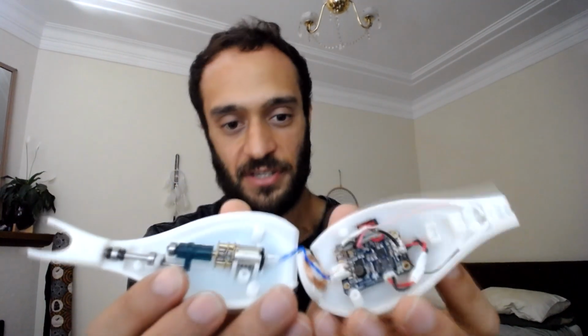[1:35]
Hi there. In this video, I'll be talking about a prototype I made a couple years back with the assistance of a friend. The idea of it was an electric tooth flosser, similar to an electric toothbrush. And I spent a few months working on it and came up with a functional prototype, which is this model here.
So that sounds quite intense, but it's not the finished version. And the idea was to have a piece of floss across this part here. So this would be a removable, disposable piece, which would have tooth floss in it. And the base is just kind of like a rechargeable permanent unit that creates some vibration. So you put the dental floss head on top, turn it on, and you would put it in between your teeth, sort of like this.
So in this video, I'll be talking about a few aspects of this project. The first of which will just be the concept and the idea, and how I came up with that with the assistance of my colleague. So check down below in the description and I'll have some timestamps of these points you can jump to, depending on what's relevant for you.
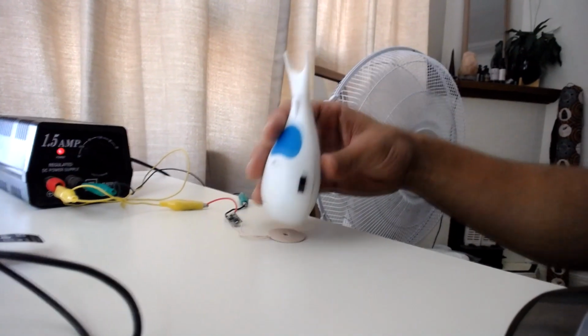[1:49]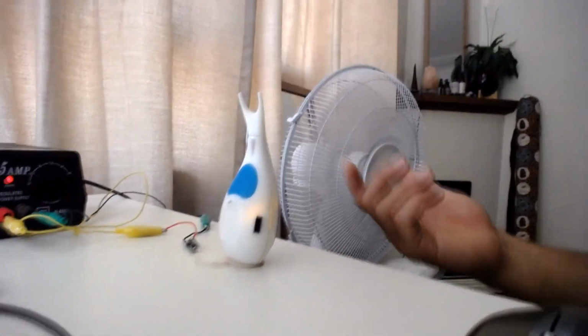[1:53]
The next point will be the prototyping, the design and the engineering, how I actually designed this and modeled it on the computer and physically made it. So just to give you a quick view of the inside, there's some electronics and mechanics involved. And also the unit is rechargeable, so I'll just quickly move the camera to show you. This is sort of the recharging docking base. So you can see as I put it down, an orange light comes on, which means it's charging. And when it's fully charged, that would turn to green.
Then I'll get on to the testing and the user feedback. So I did get a few people to try this out, and the feedback was actually quite good. So I'll speak briefly about that. The next step was determining how we would get a small batch manufactured, say 20 to 50, just to do a first sort of beta testing of these units. And I'll discuss that. And then the final step is the large-scale manufacturing and the business evaluation. And in that point, I'll talk about why I didn't pursue this idea or this project further.
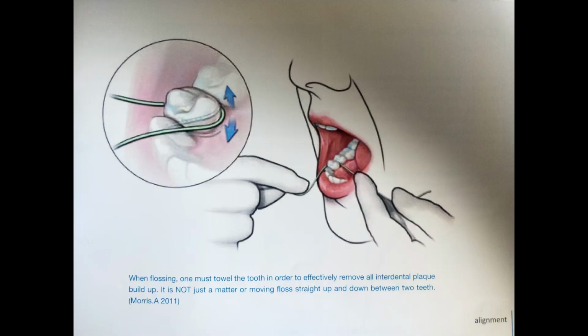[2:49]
But regardless, I actually learned quite a lot from this, about sort of business and trying to set up a small company if I were to do so. And more importantly, a lot about engineering and design engineering. So I'm a mechanical engineer now, and this project was quite valuable to me, and I'll discuss that more as we go throughout the video.
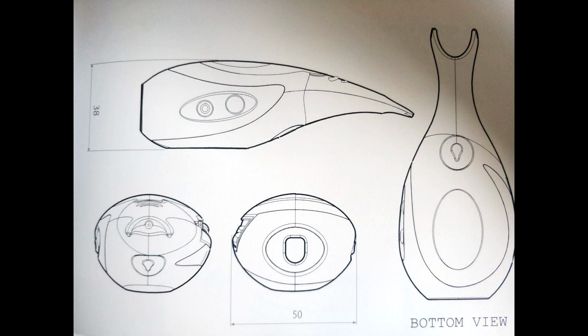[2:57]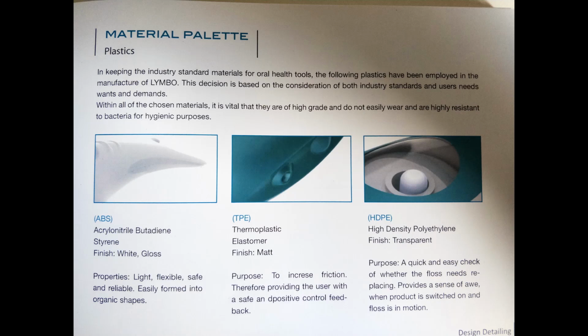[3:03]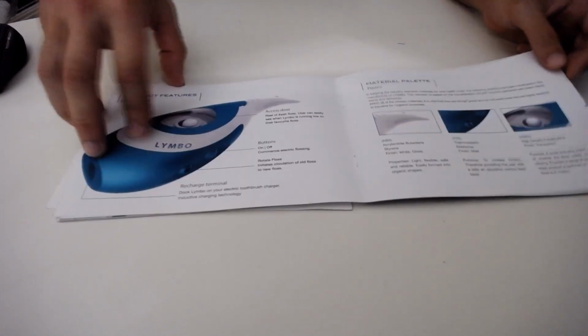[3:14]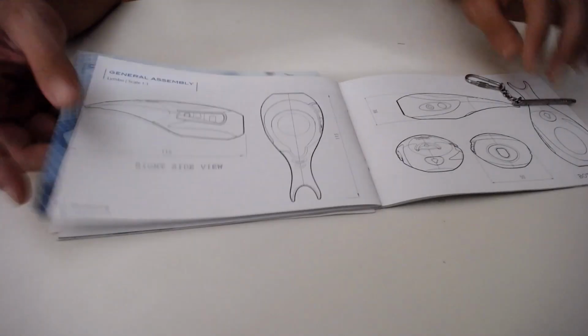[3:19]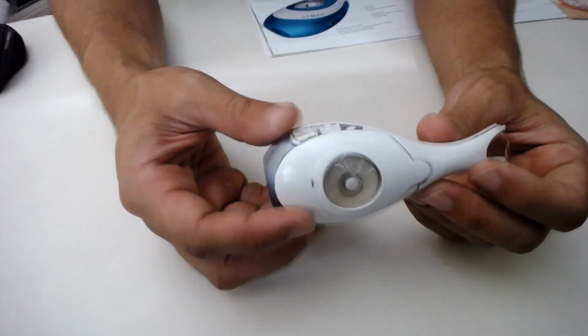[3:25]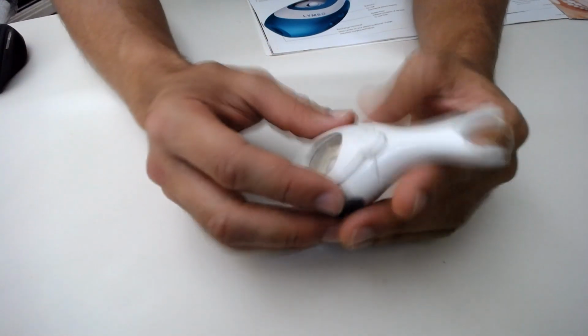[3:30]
All right, so looking at the initial concept there and the idea of this project or this product, it actually came from a friend of a friend who had done some kind of project or task at university on coming up with a product for an industrial design project. I don't want to talk too much about her work, but she put together quite a good range of work on a concept of such a thing, and did a rough model, like an aesthetic model and some drawings. So when she approached me, she actually had this model of it, which wasn't a functional unit, but just sort of demonstrated the concept and the form of the idea.
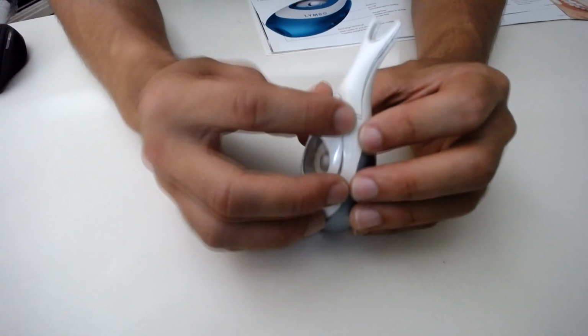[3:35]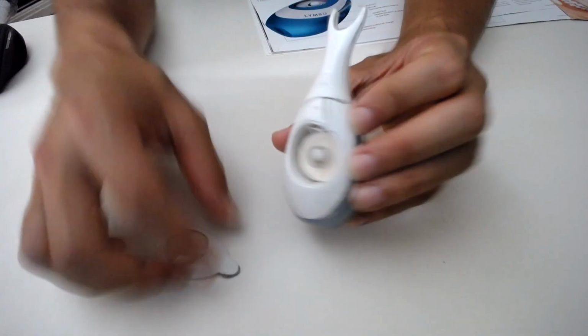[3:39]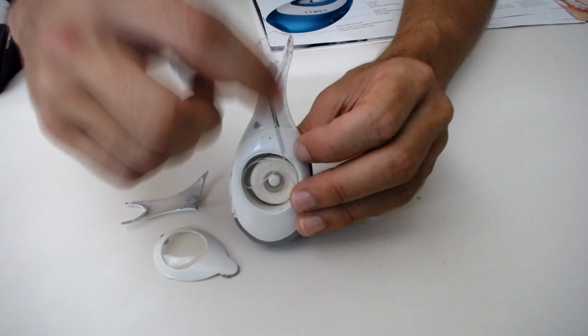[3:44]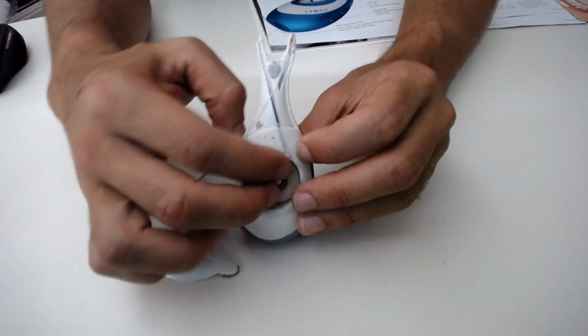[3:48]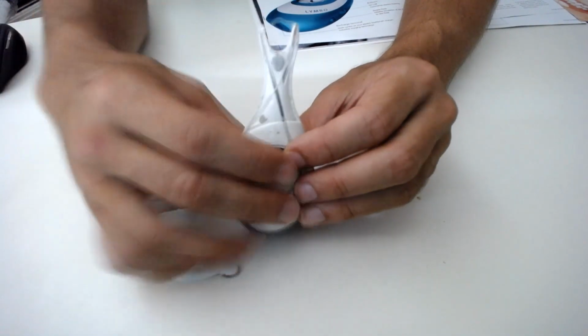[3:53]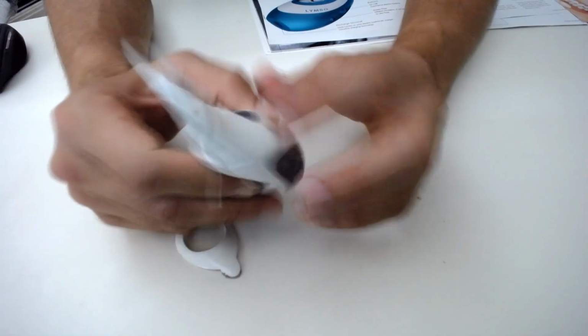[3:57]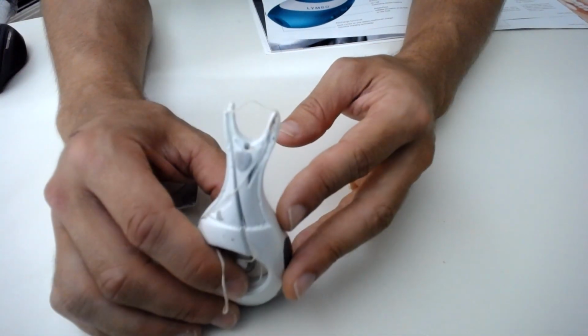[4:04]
Her initial idea was to have sort of a roll of tooth floss in the center here, which would be replaceable. And that would feed up in such a way that it would sort of loop around and pass through this top here. The idea was to have a motor in here that would rotate this round, and the floss would run around, and then you would put that between your teeth. And the power button would just sort of be on the side, and you would have a light somewhere here, a little LED to just let you see what you're doing inside your mouth a bit easier.
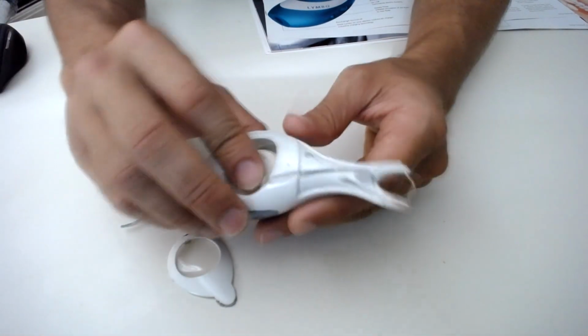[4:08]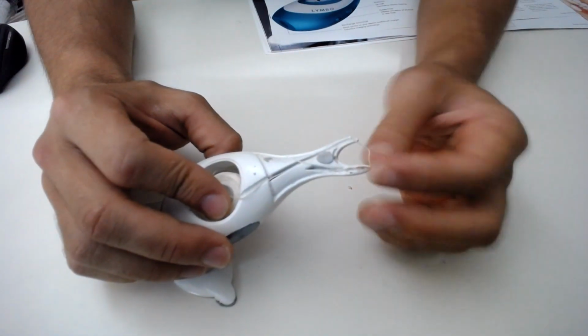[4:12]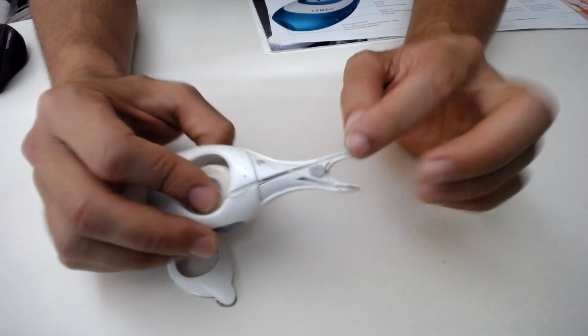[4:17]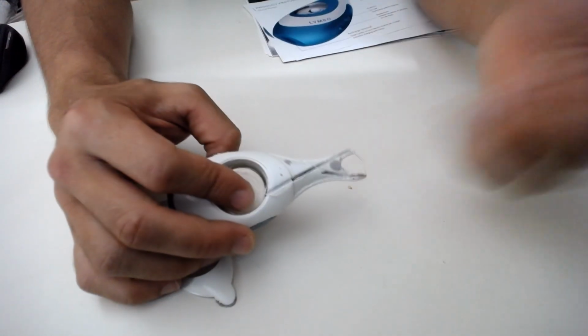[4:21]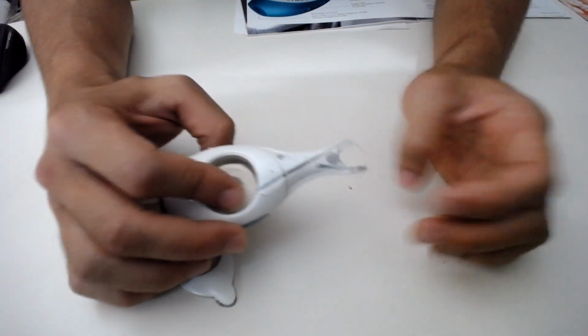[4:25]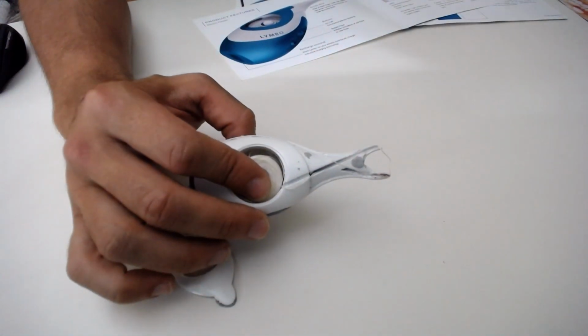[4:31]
The problem I had with this idea was that I didn't think it was very hygienic, because obviously you could have a lot of gross and dirty stuff in between your teeth. So as the floss would pull that off, it would pull it back inside the device. At the time she approached me, I was actually working as a research engineer in a medical device company that specialized in infection prevention, and they made devices that would sterilize and disinfect medical equipment.
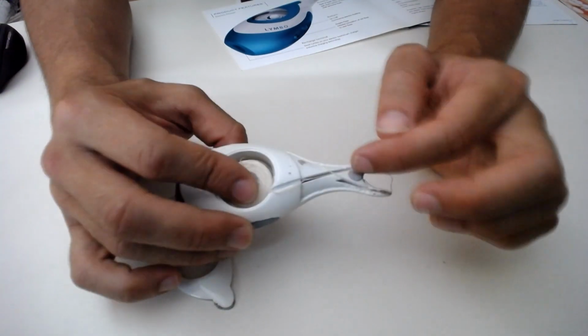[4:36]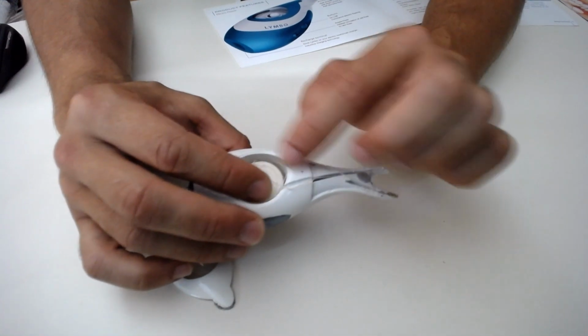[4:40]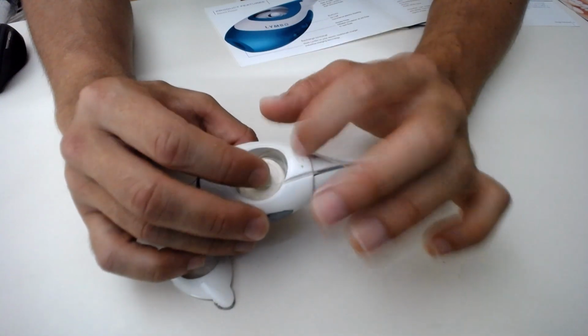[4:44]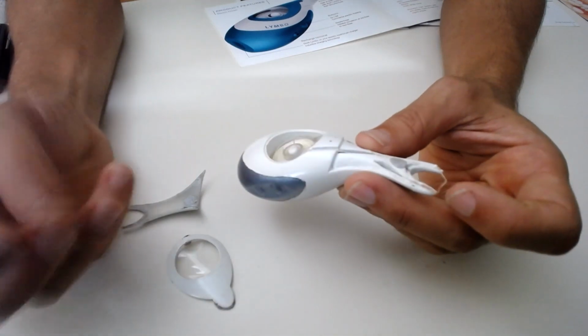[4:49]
I was just thinking, if you had something that was pulling bacteria inside these small paths, these small channels, it would create a lot of biofilm and just get dirty over time. And it wouldn't be something that you would want to continuously put inside your mouth.
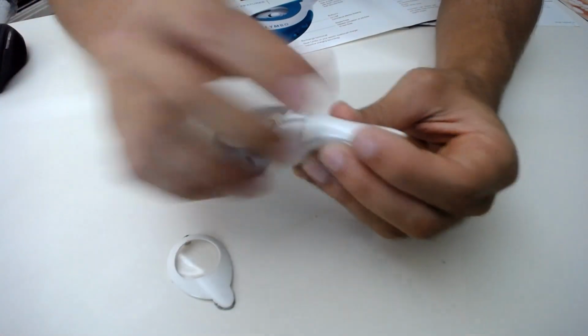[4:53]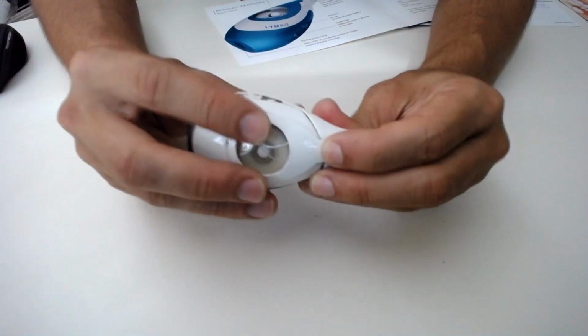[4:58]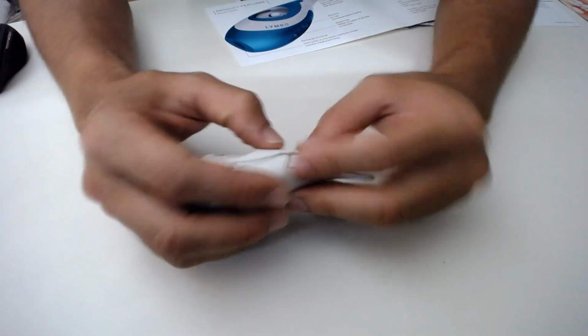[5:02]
I had to think about it, and initially, to be honest, I didn't think it was really a good idea. I wasn't that keen to work on the project. But I thought about it a few months later. I thought, why not? May as well give it a go. I had some spare time on my hands.
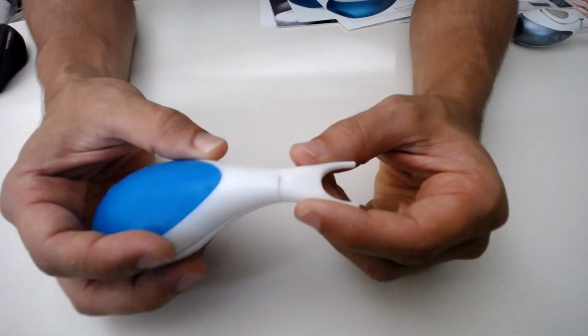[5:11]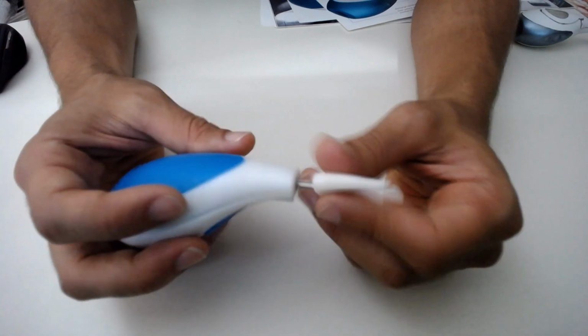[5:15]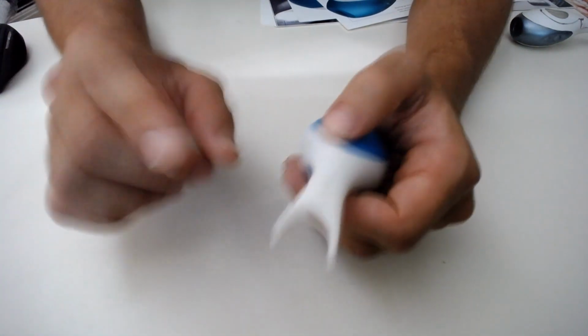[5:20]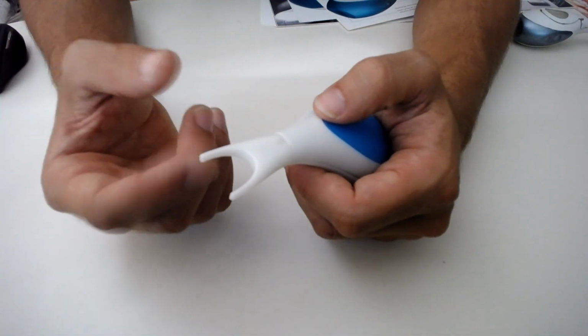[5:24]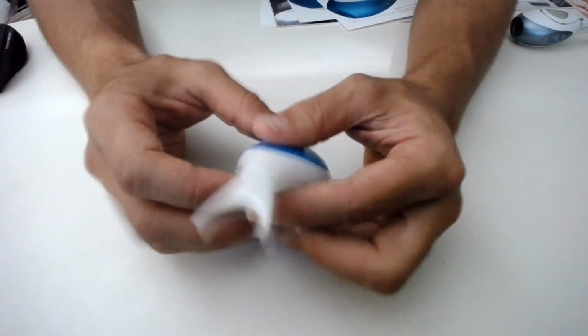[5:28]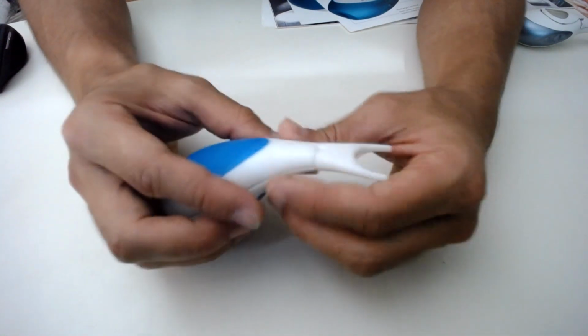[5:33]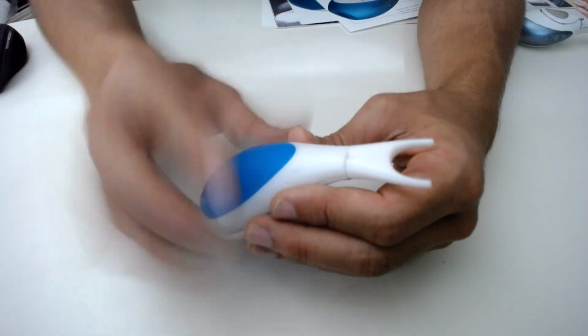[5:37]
I came up with the idea of a replaceable head and actually looked at some electric tooth flossers. And electric tooth flossers tend to have a circular head at the top. I used to think it just rotated around continuously, but it actually just swivels back and forth. So I opened the old one I had up, and it had a mechanism inside that caused some knocking back and forth, which translates to vibration roughly.
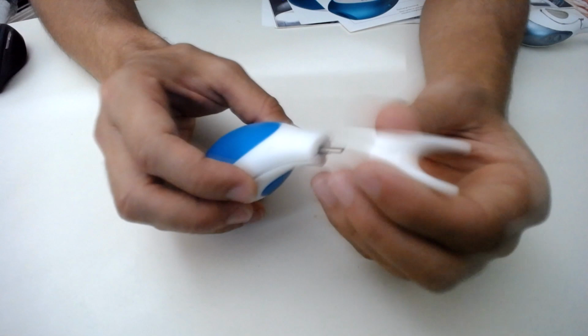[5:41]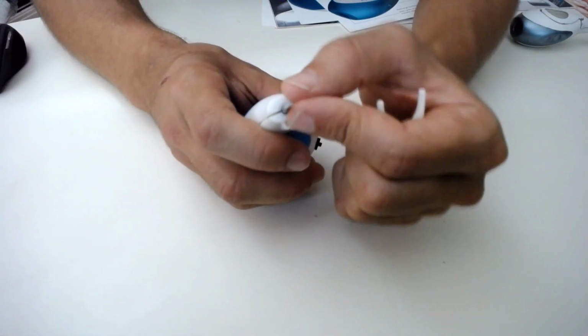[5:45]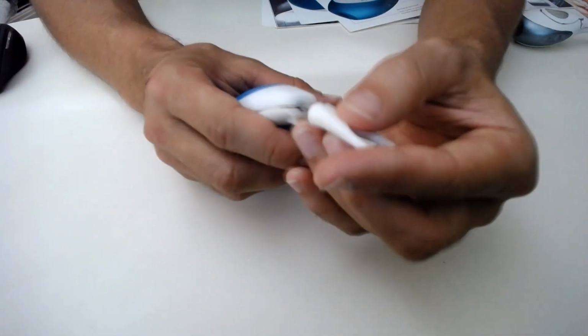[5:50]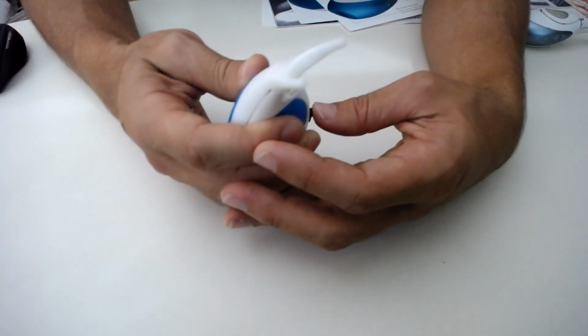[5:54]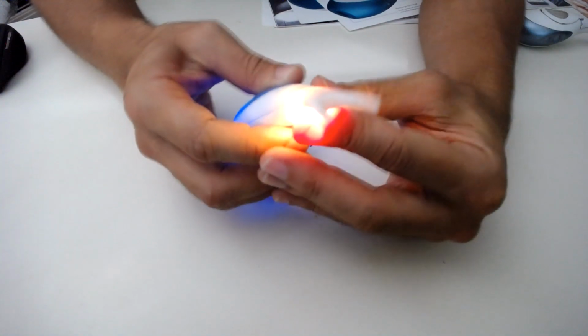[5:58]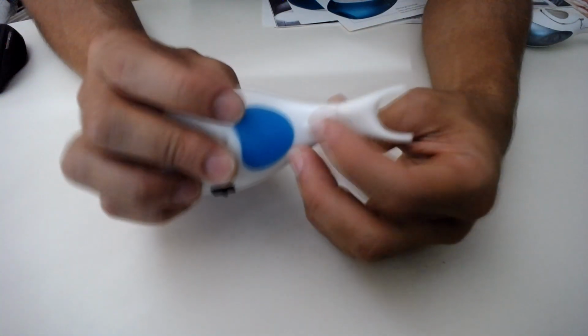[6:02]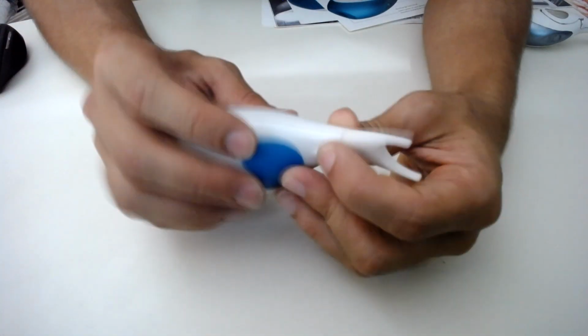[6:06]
The idea was that I would have this shaft which would swivel back and forth, rotate slightly on the spot, and then you would put this head on, which would also rotate, and the end effect was just some vibration. This is a bit intense, but it could have easily been toned down for something more subtle and smooth.
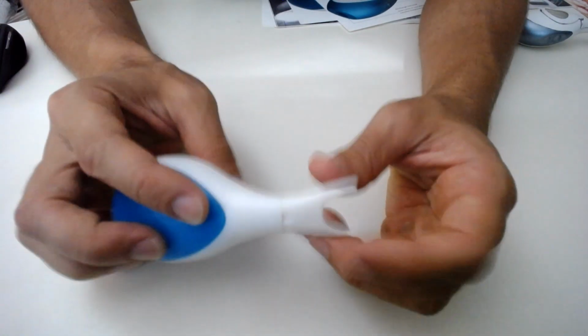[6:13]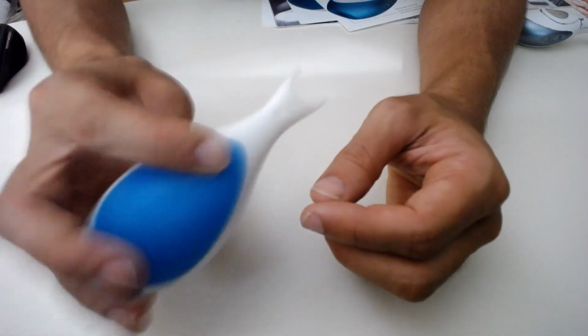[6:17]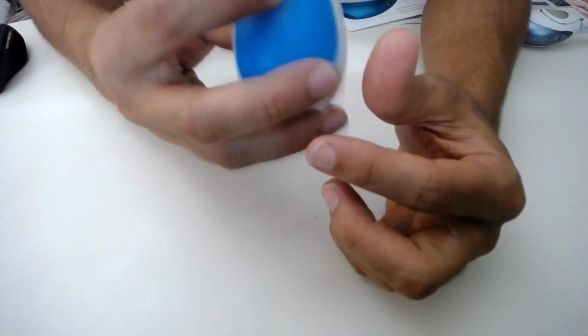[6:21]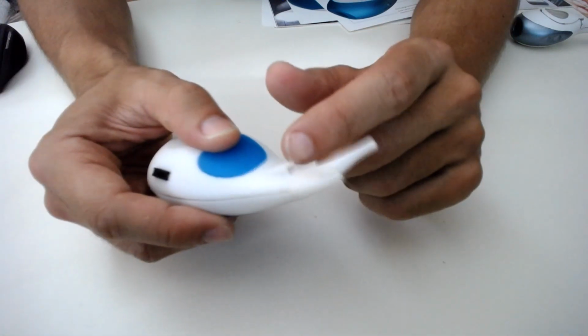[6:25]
The idea in my mind was that that vibration would just help loosen up any kind of plaque or stuff between your teeth and would help insert the floss between your teeth. And the general shape of the thing would be nice to handle and manipulate to put inside your mouth, and the light would help you see things a bit clearer.
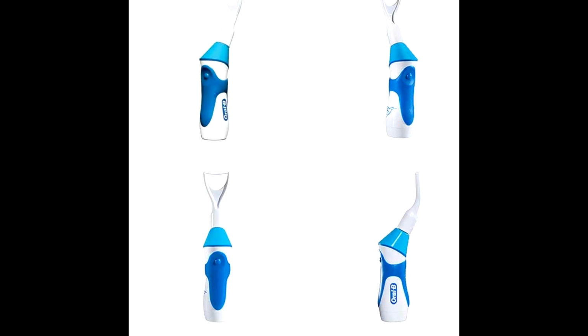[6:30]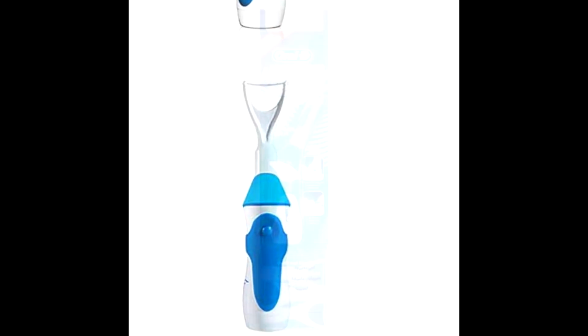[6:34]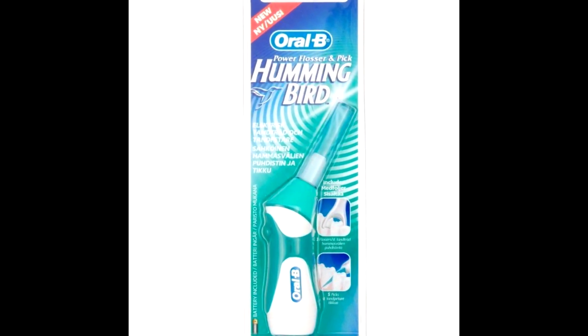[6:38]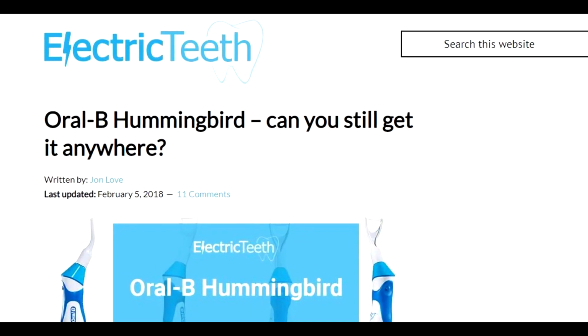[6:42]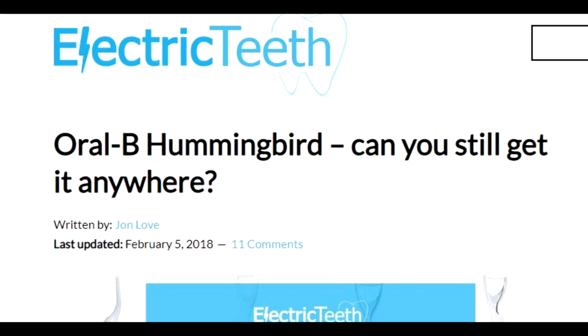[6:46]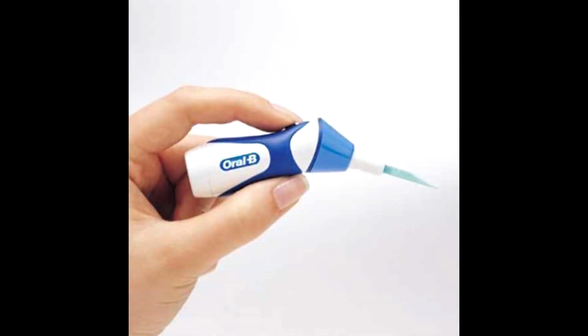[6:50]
Turned out that Oral-B actually made a device similar to this in the past, which was called the Oral-B Hummingbird. This device was discontinued, so through all of my research I couldn't actually find the exact reason why it was discontinued, but it seemed like a fairly nifty device. It again had the replaceable floss head, so I hadn't thought of anything new there.
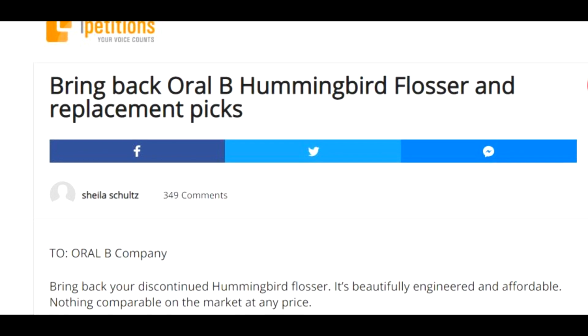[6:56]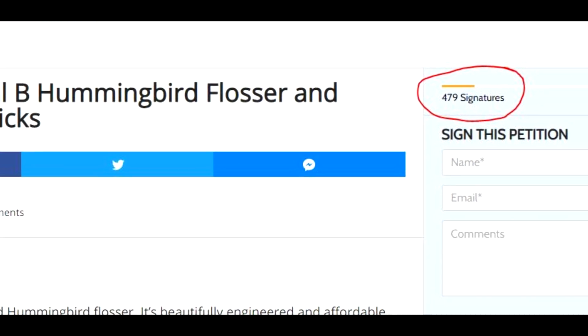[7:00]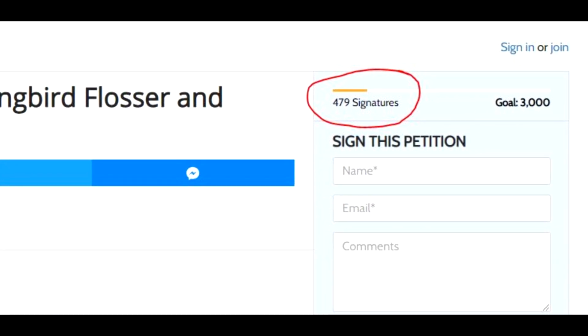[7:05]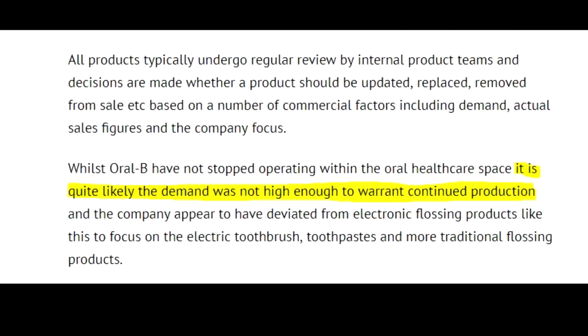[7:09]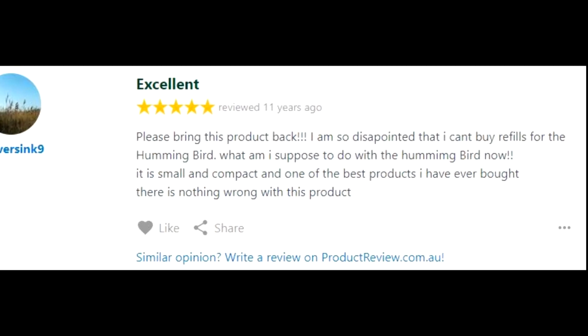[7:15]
Found some forums where some people were asking if they could still get this device and they'd be a fan if it came back. So yeah, I wasn't clear why this was discontinued. The first thought that came to my mind was that it wasn't selling well. There wasn't necessarily a market for it. People didn't want it, but there were still quite a few people on this forum I found that were asking for it to come back.
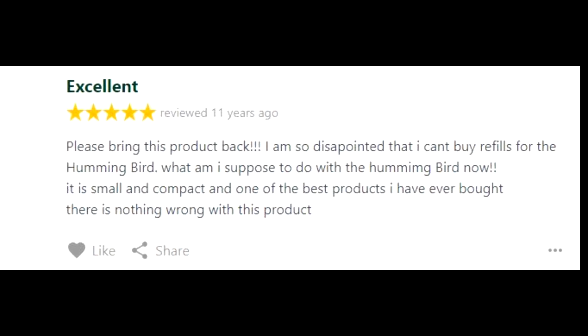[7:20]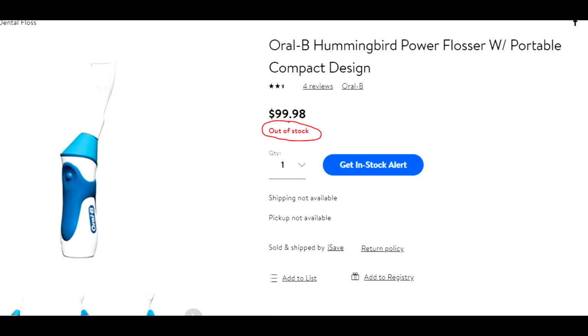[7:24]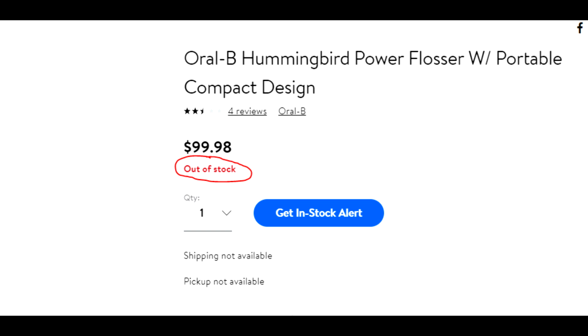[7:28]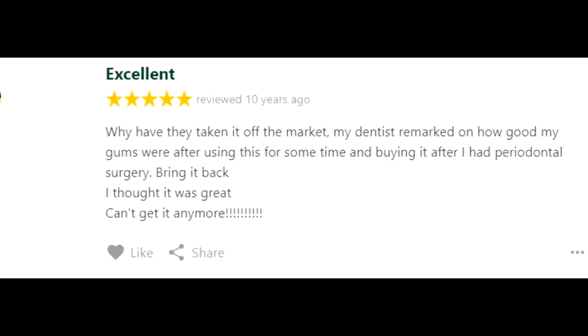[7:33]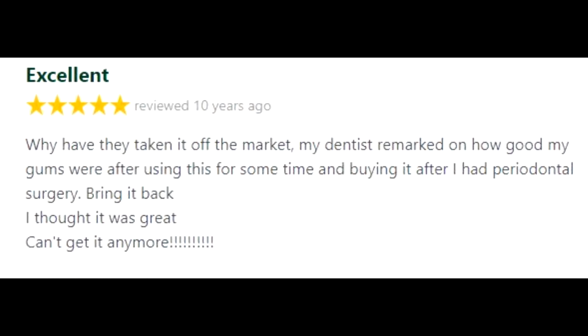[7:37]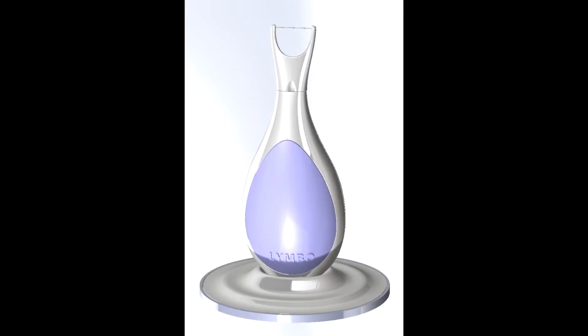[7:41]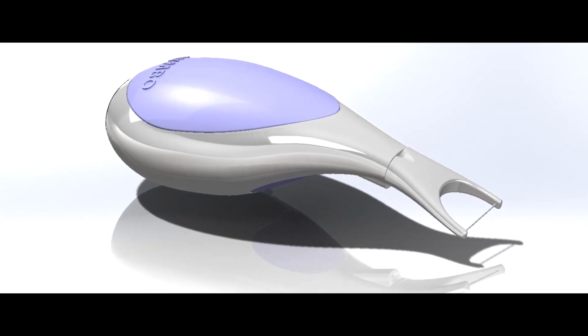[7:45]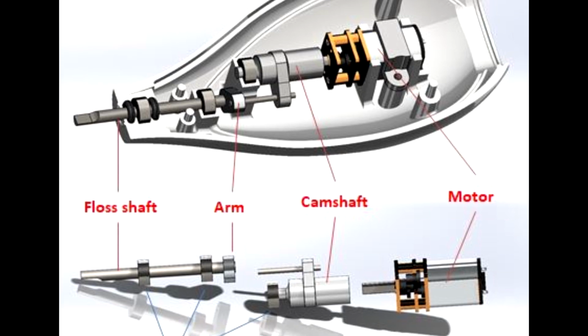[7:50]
And I think possibly even still to this day, you can buy replacement heads for the Oral-B Hummingbird on eBay. The price is ridiculously expensive now. But I thought, it's one of these things you don't really know if this kind of product would sell until it was on the market, and a lot of it would depend on marketing as well. So I thought, why not give it a shot? I really hadn't invested much money or time into it so far, so was quite optimistic at that point.
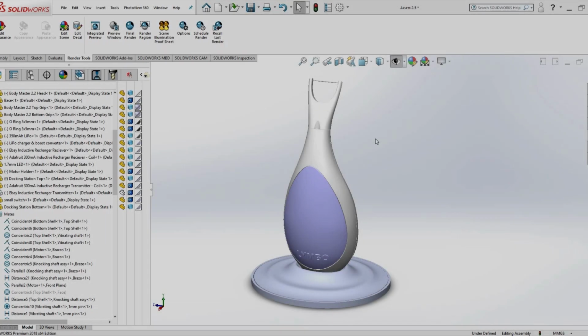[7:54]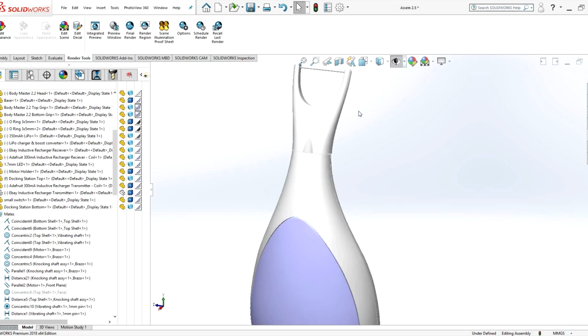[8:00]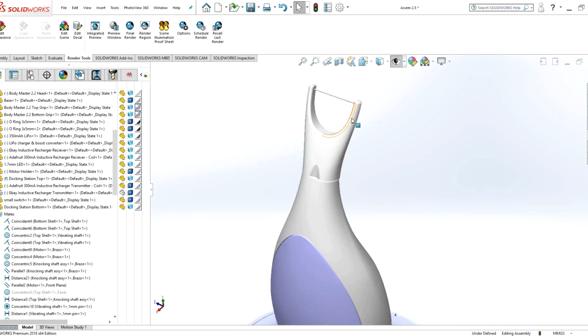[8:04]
All right, jumping straight into the mechanical design. It won't be possible for me to cover every detail in this video, but if there are any questions you have, feel free to comment below, and I'll try to get back to you with some useful information.
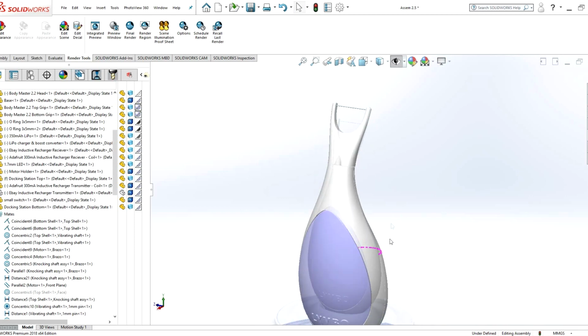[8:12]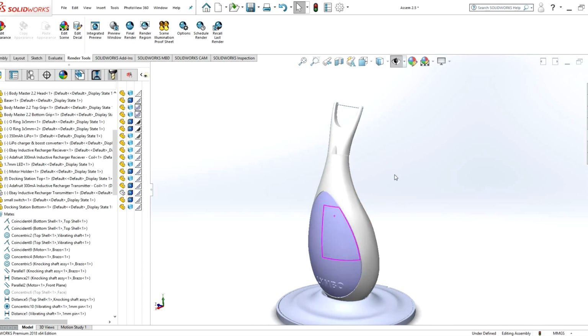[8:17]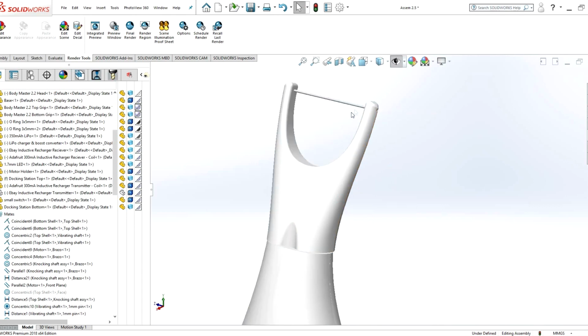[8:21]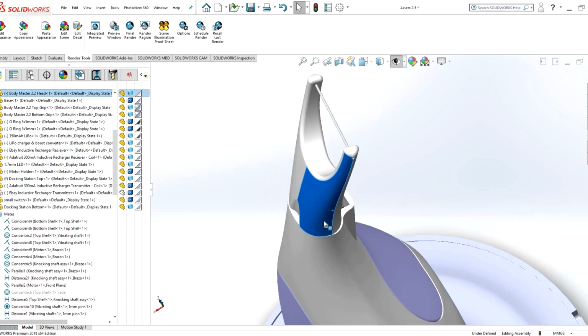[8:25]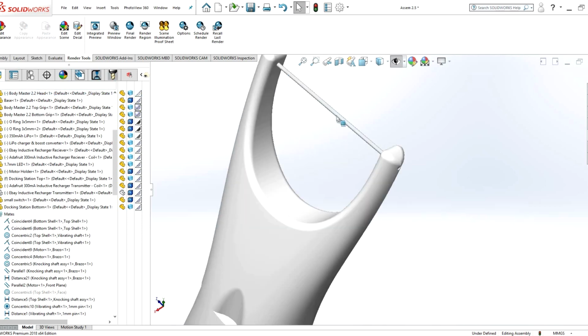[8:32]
So when I first started, the first fundamental step was really just thinking about how I wanted the mechanism to work. As I said earlier, the form was given to me by a friend of a friend, and I decided that I would have a removable head that would vibrate roughly like this, just back and forth, minimal vibration. And one thing that you couldn't see on the prototype I showed earlier was the actual floss embedded in the replaceable head.
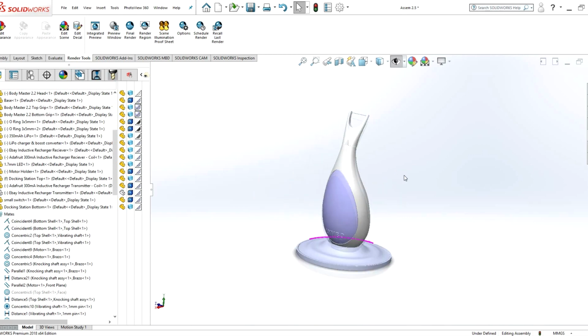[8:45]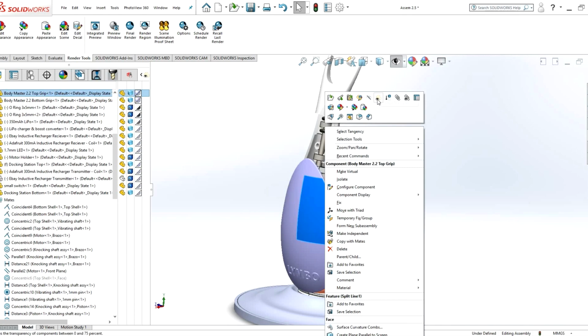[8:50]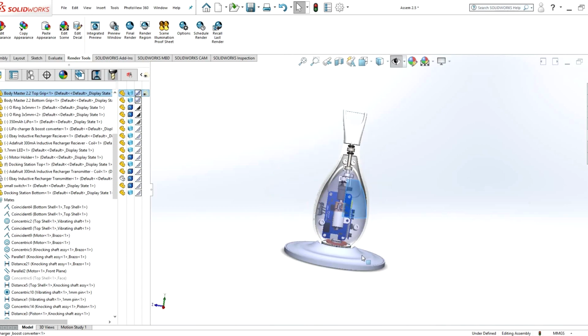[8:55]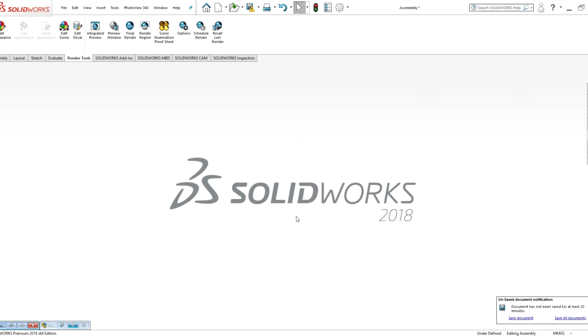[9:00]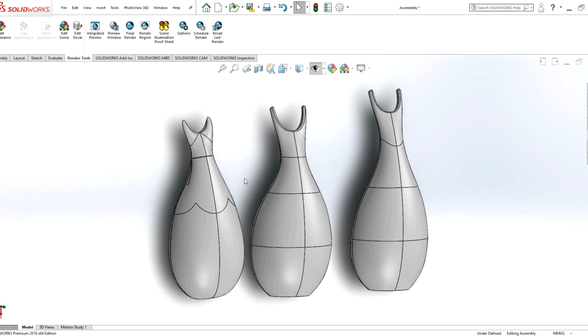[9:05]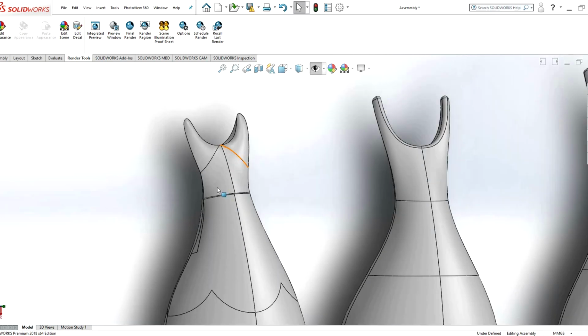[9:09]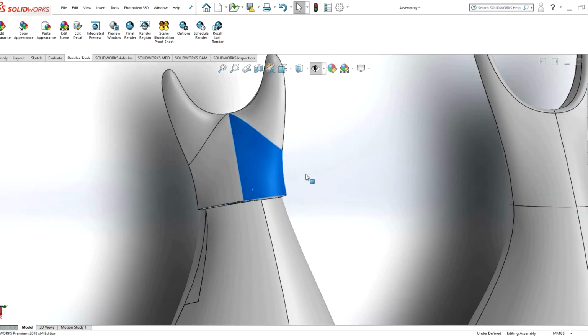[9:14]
That was one thing that was difficult to prototype. I did actually prototype it, but I don't have that model anymore, but I'll talk about that in a little bit. So before I get to this final model, which actually has all the internal electronics and whatnot visible in there, I'll just go back a few steps. First of all, I started with modeling some different shapes and forms. I think this unit on the left was one of the first models I did, which had the rough idea of how I wanted the mechanism to work.
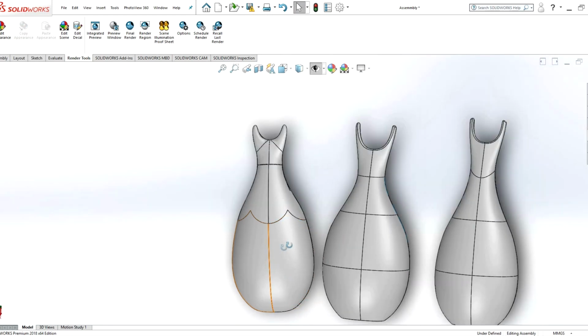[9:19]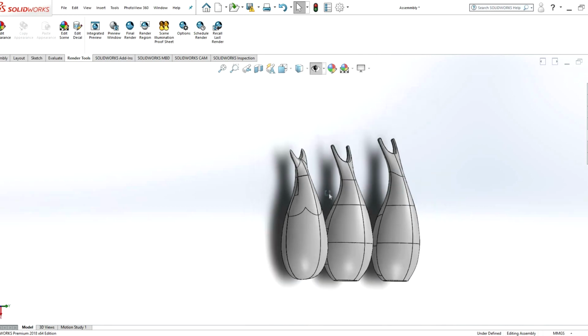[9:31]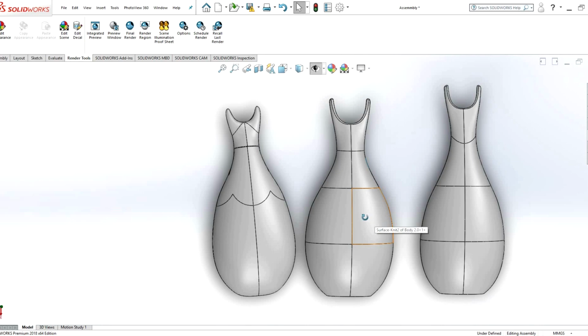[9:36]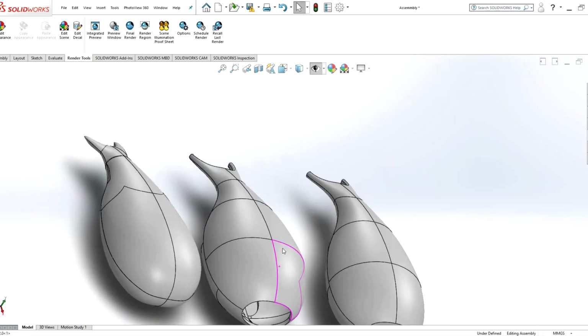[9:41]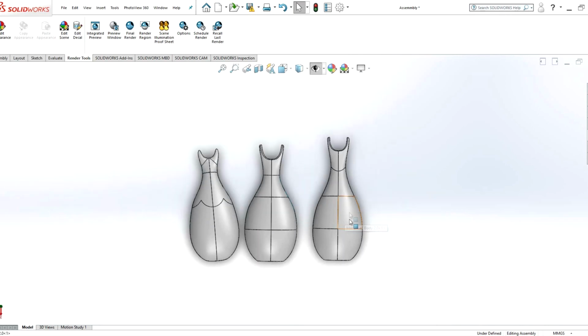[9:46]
But this doesn't look as nice as the final units. And just with general design and engineering, you go through a range of iterations, and each unit gets progressively better until you get to a point where you're satisfied with it. So from this early stage on the left, I went to a more streamlined unit in the middle, but it was still quite round and big and just looked a bit inflated. And then I ended up getting to this unit on the right, which is more representative of what I wanted to go for.
Because this thing needed to be quite small, I needed to work with small components. So to determine the actual size of it, or the ideal size it could be, I had to first figure out what components I was going to work with. So I knew I needed a little motor for the vibration mechanism. And basically I was copying the vibration mechanism that I'd found in an electric toothbrush.
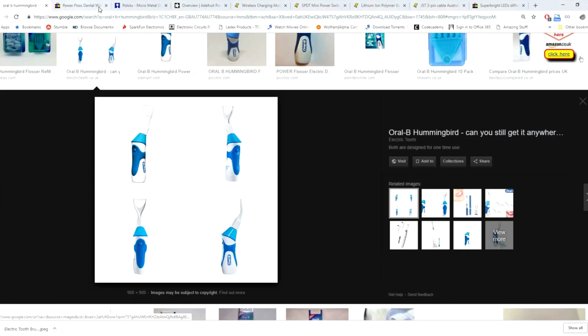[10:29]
And I just encourage people in general, if you're a tinkerer or an engineer or designer, to open up mechanisms out there and have a look what's inside. So an electric toothbrush, like shown here, actually has a motor inside creating some vibration, and the circular head up here doesn't continuously rotate around, but just swivels back and forth. And I used a similar mechanism in the electric tooth flosser.
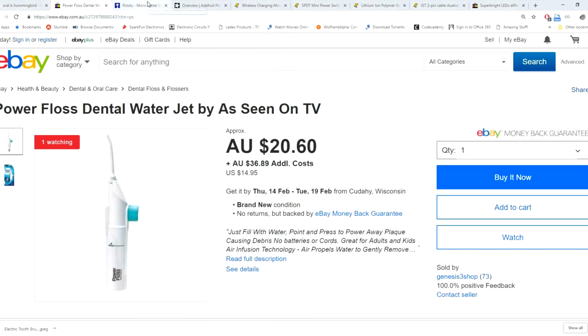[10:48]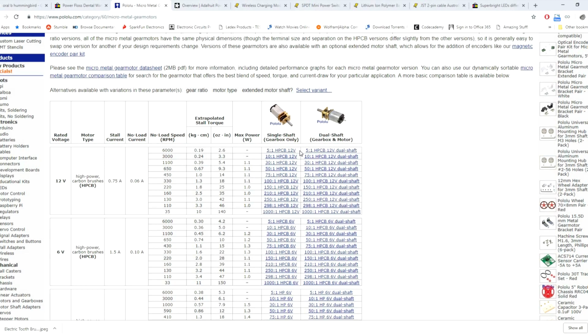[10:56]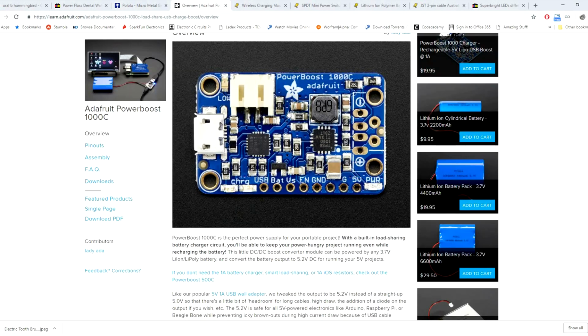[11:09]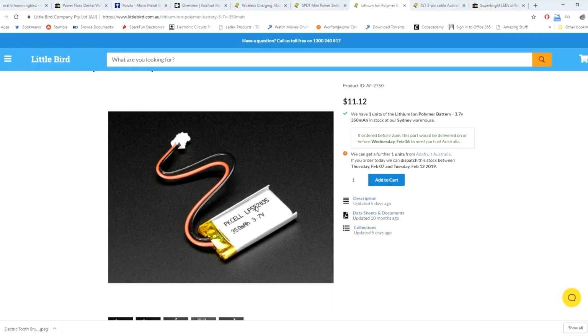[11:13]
So to find the motor, I was just looking for micro motors, the smallest motors I could get, and I found this company, Pololu, that makes a range of small motors. So I decided what voltage and gear ratio I needed and ordered a few of these and then modeled them up so I'd have an idea of their size. I also found some other components. So some important ones were a small lithium-ion battery.
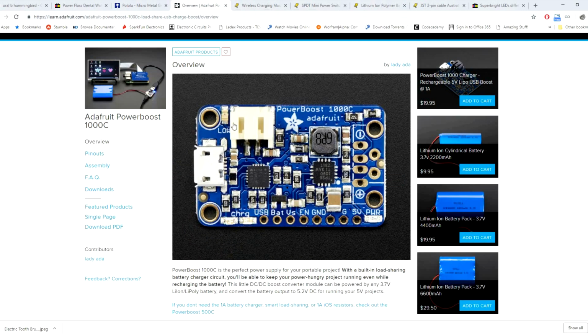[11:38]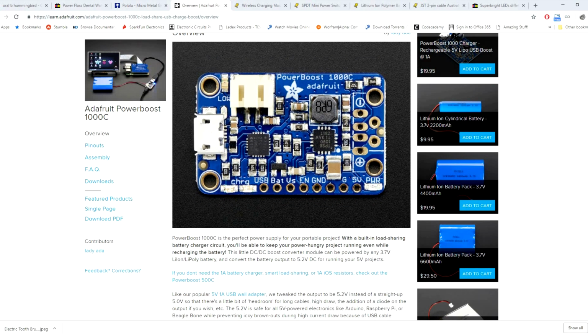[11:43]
So I did some rough calculations of how long I would need this thing to last, at least like 10-15 minutes, ideally longer, so it doesn't have to be recharged in between each use. But I found that 350 milliamp hours was suitable. So from there, I ordered one of these and got the size and dimensions. I also had to get a little power board, which is essentially like a power regulator, a power supply. So you plug the battery into this and then plug the motor into this, essentially.
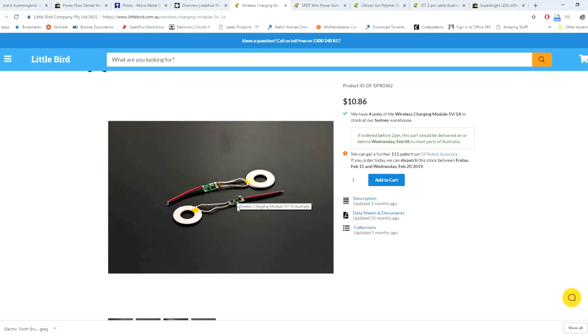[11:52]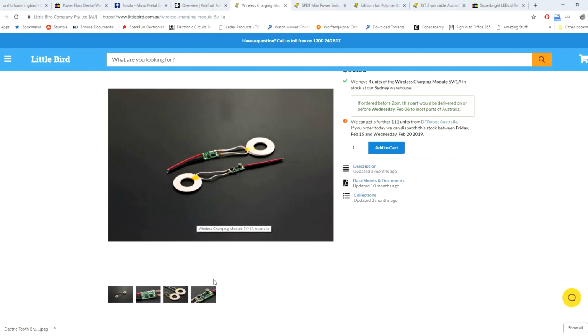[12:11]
I also found some little wireless charging units. So these things were quite cool. Essentially, they're two copper coils, and through inductive recharging, you can basically place one of these coils on the other. So one of them will be connected to a power supply. The other will be connected to a little recharging board, which then plugs into your power board. And they can be separated by, I think, up to 5 millimeters, half a centimeter. And yeah, so one of these was sitting inside the unit and the other was sitting inside a little recharging base or a docking station.
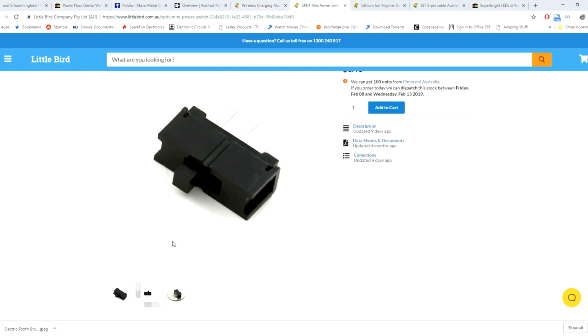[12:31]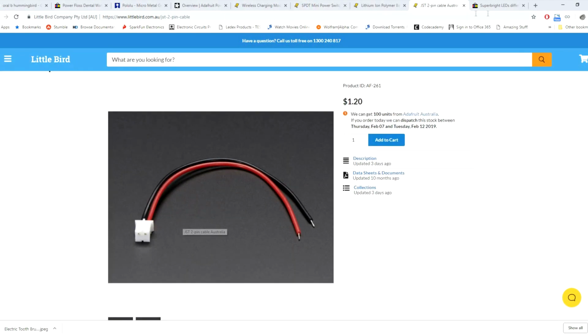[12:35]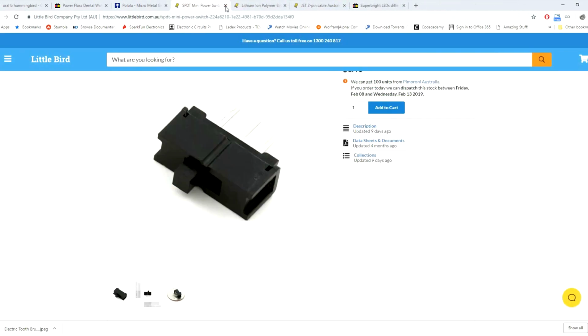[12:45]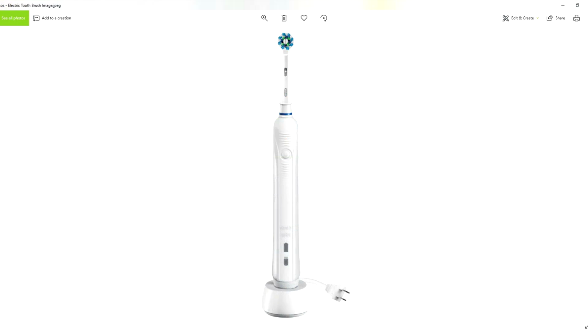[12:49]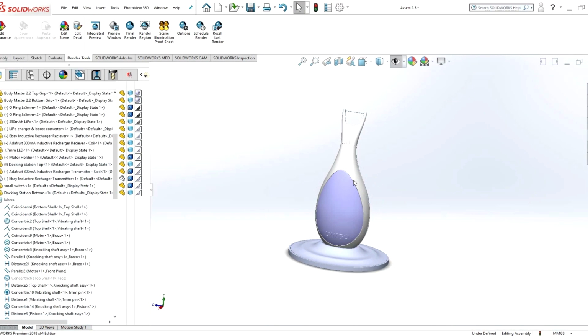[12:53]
And some other basic components were just like some power switches, some cables with connectors, some little LEDs. As I mentioned earlier, there was a little LED in the device. So once I'd ordered all these things, I did a model of them in Solidworks, and from there essentially started making the size ideal. So again, this is an iterative process.
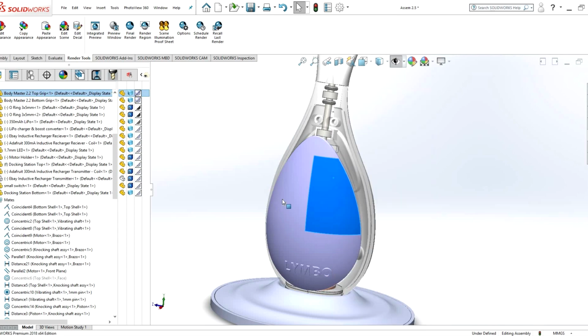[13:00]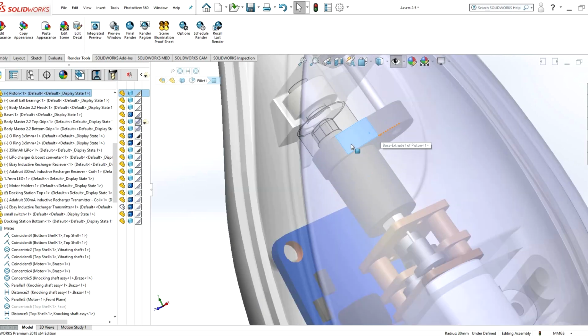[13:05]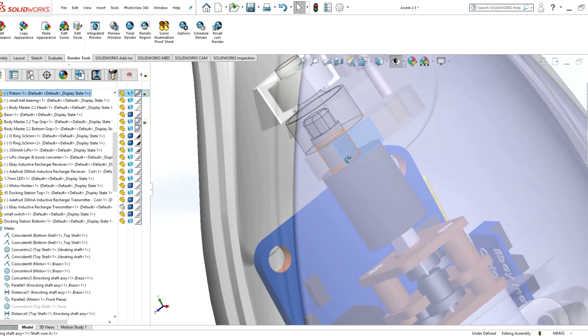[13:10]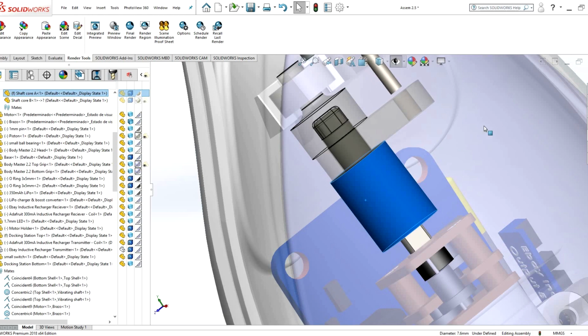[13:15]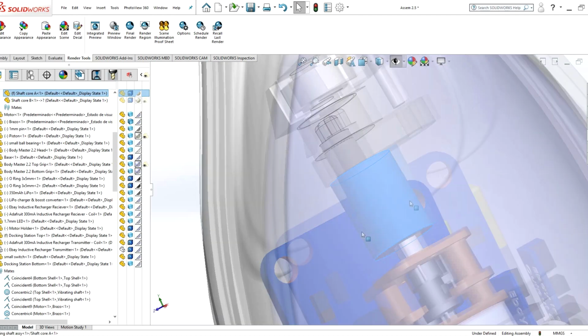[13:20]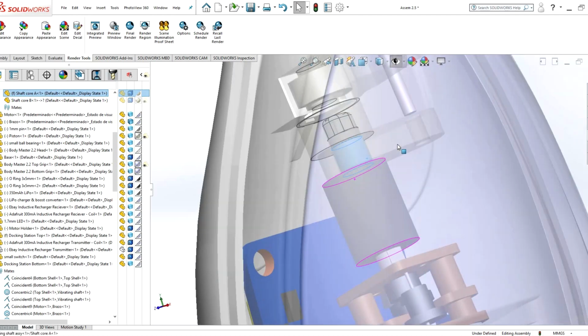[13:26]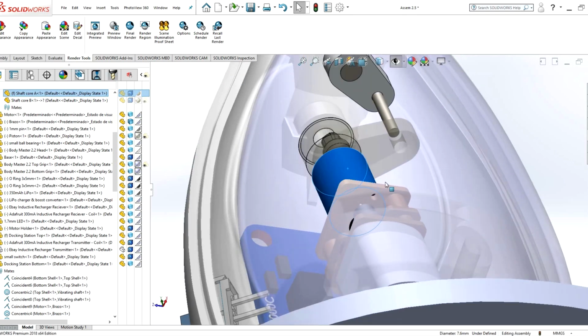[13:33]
This motor is attached to various little components. I'll quickly try to explain it here, but this shaft on this piece is offset from the center. So as it rotates around, it's not staying in the center. If you can see that there, hopefully. And what that does is this little cam piece that's connected to it swivels back and forth. If you can see that.
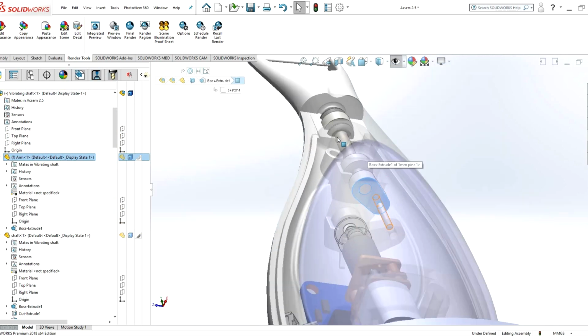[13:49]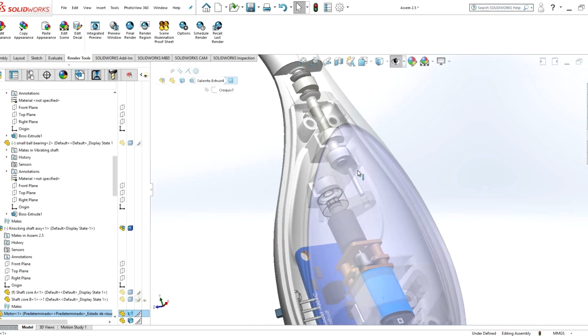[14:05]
And then this little steel pin is connected to this cam piece, which is connected to another arm up here, which is then finally connected to a shaft that the floss head sits on. So the final result is we get this vibration back and forth of the floss head, which comes directly from the rotation of this little micro motor here.
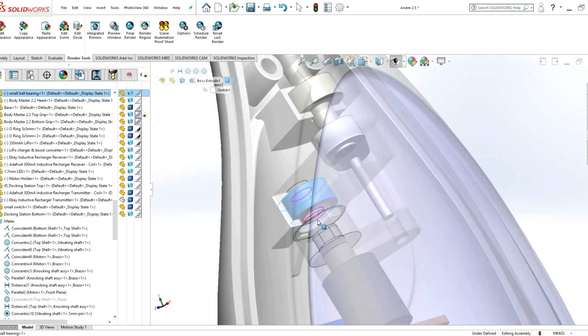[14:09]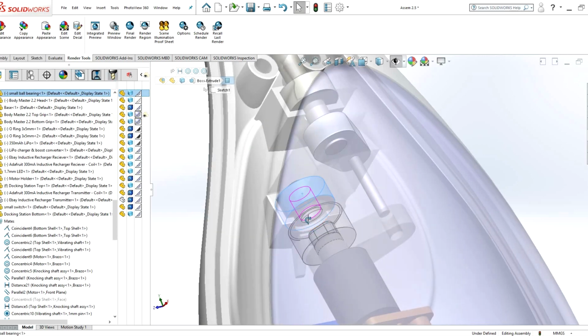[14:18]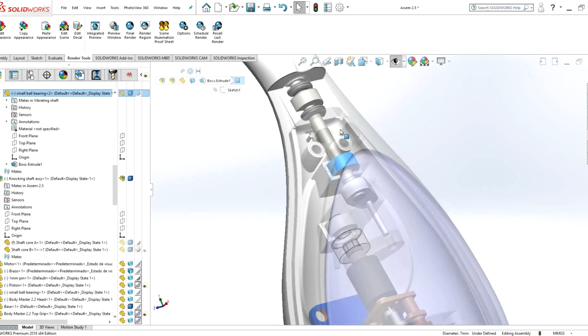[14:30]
So these pieces here are just some little ball bearings that contain the unit. So the ball bearings are quite necessary to help keep the unit stable and secure, and also minimize friction. So we don't want the shaft just sitting on a piece of plastic that it's sliding against. We actually want it rotating in a ball bearing. And we have a couple ball bearings placed up here as well.
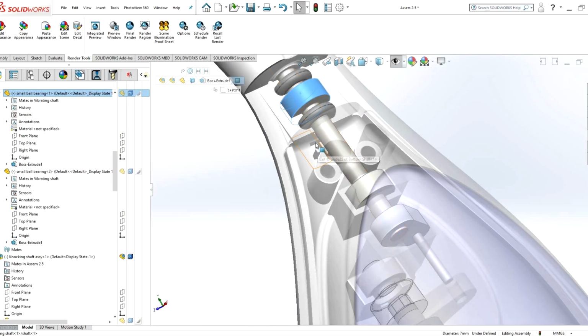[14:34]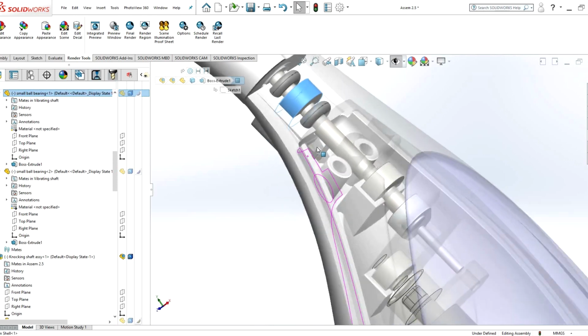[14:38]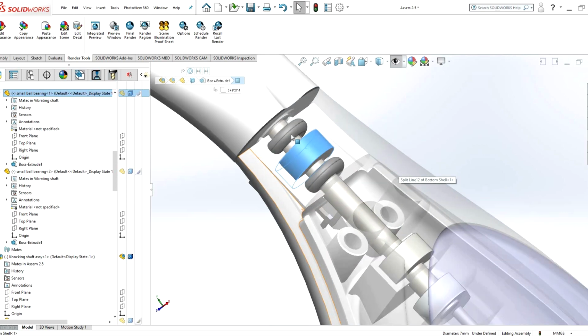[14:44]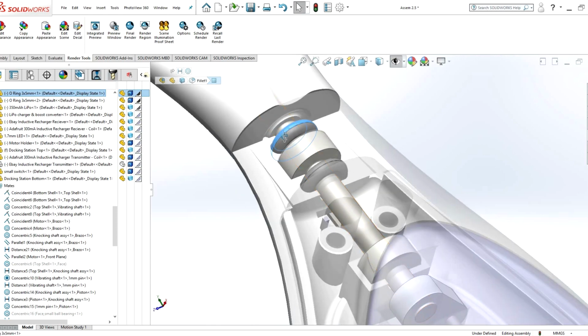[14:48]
This design is by no means optimized. It was just a prototype, so it's not ready for complete mass manufacture. And I put a couple O-rings in there to try help keep it watertight, but that would have required a bit more development to get it to a robust level.
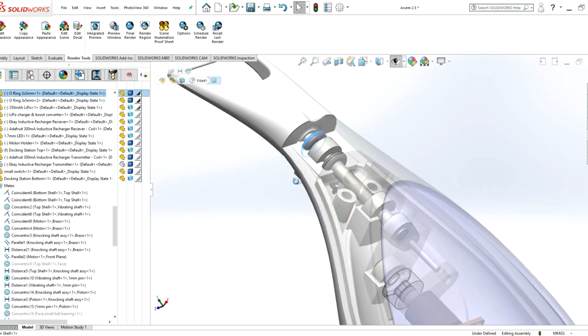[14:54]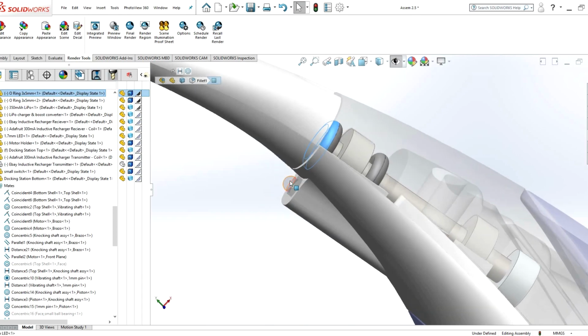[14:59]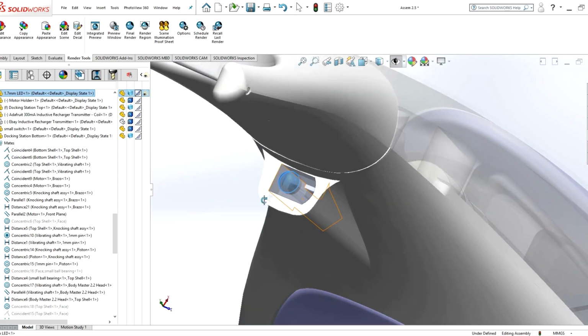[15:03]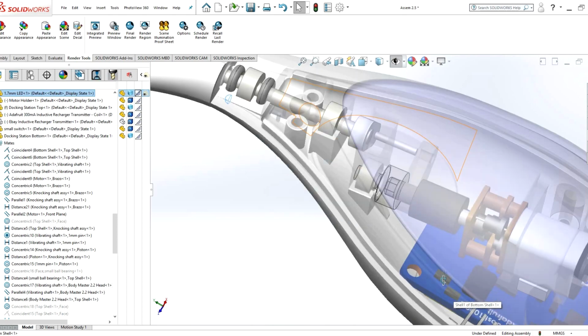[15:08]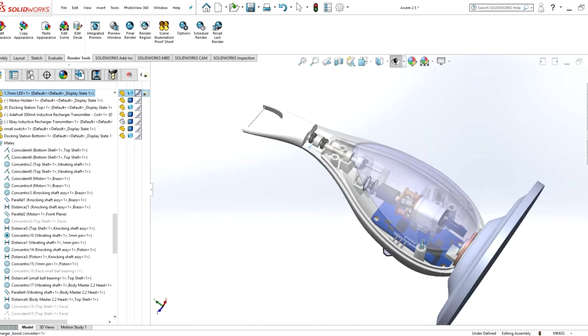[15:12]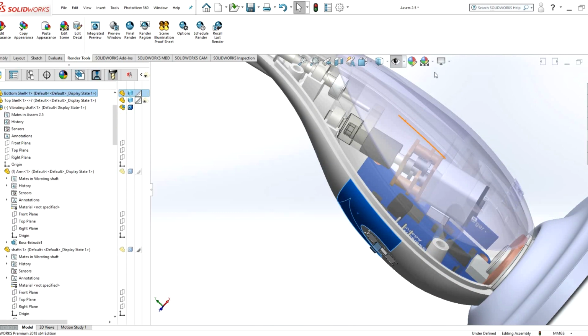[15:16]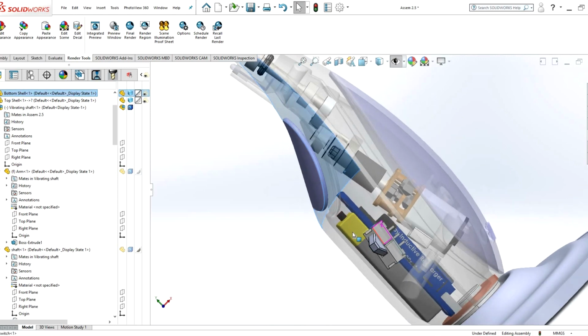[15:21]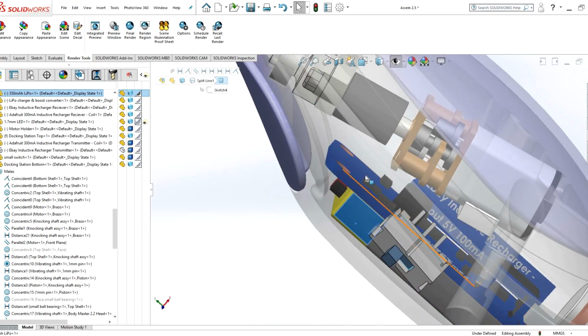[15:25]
The LED was positioned here. I'll just change the transparency of that. So yeah, that was sitting in there, and its wires were running along down to the main circuit board. And I'll also demonstrate this on the real model shortly. And if I change the transparency of this piece, we can see that the lithium-ion battery is sitting at the base of the lower half of the unit.
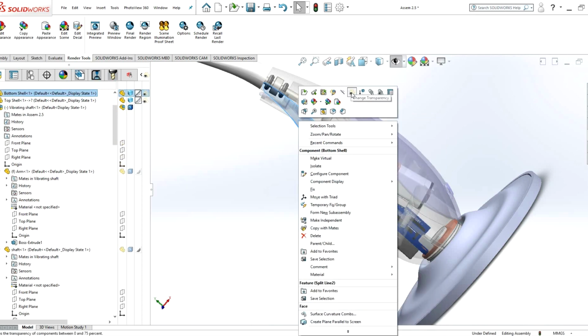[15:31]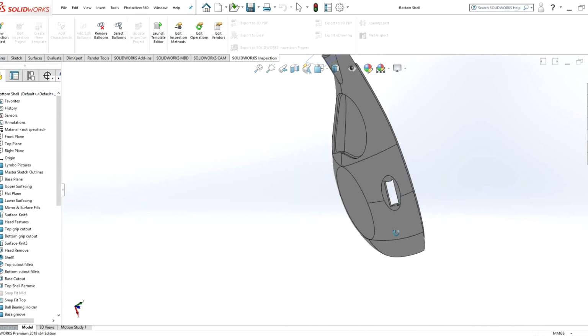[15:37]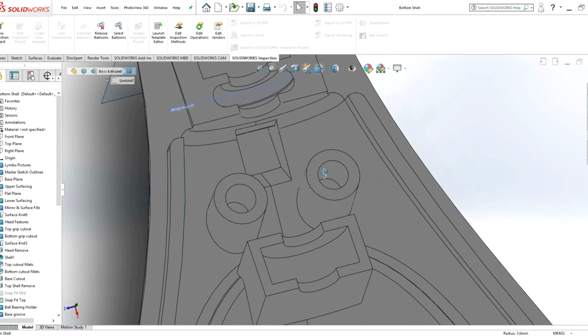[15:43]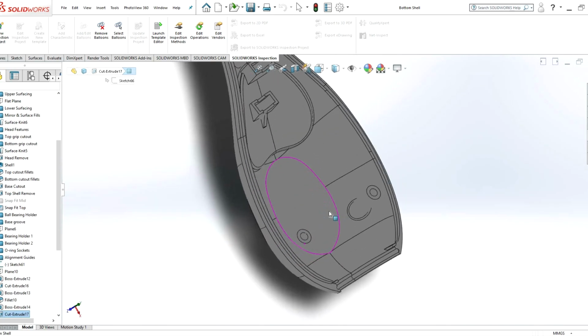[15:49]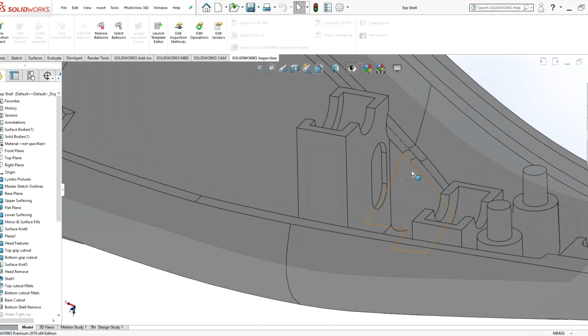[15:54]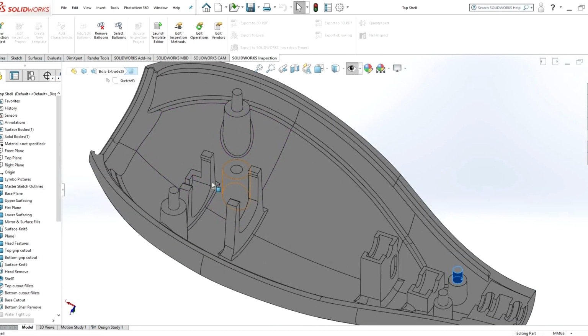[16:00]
Sorry, also these things are split into two halves. So if I open this component, this is the bottom half of the piece. We can see the little mounting features for the ball bearings. These are just some cylinders. I call them alignment guides. And if I show you the top piece, it will make a bit more sense. The top piece had the male equivalents, so they would lock into place. I think my plan for securing the prototype was to put a few drops of super glue on the male alignment guides, and then they would bond with the other piece.
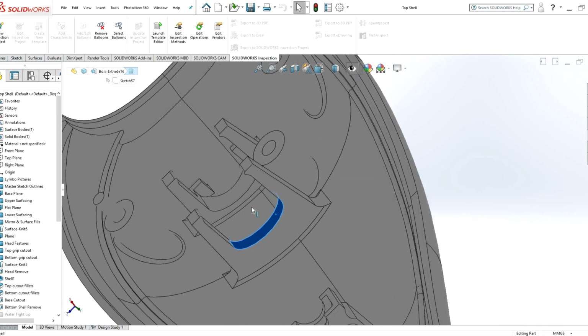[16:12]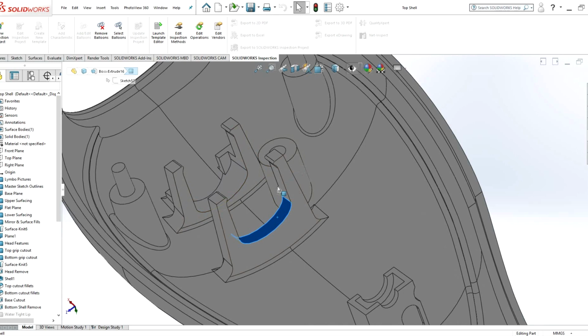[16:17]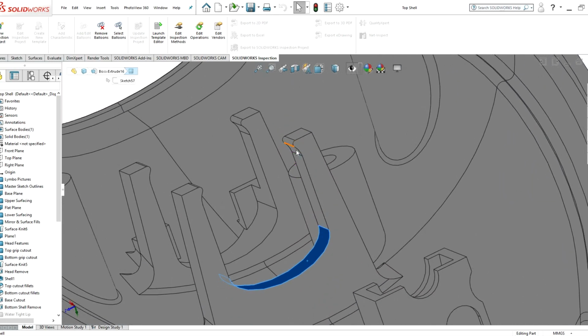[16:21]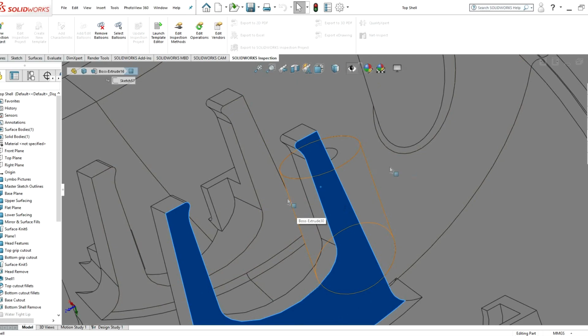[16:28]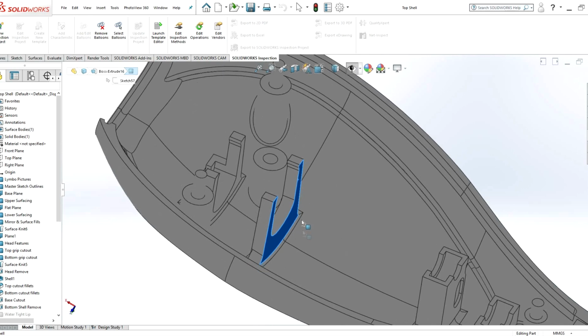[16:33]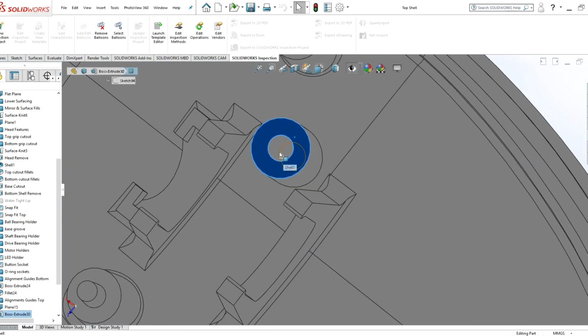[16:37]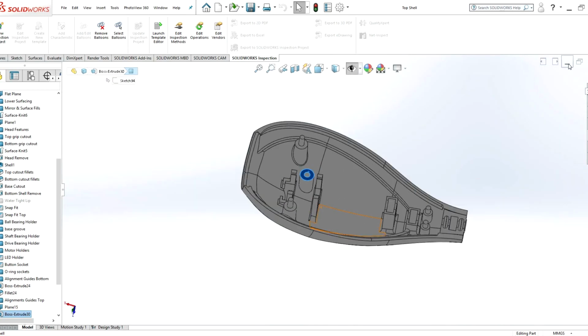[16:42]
These pieces here were actually little mounts for the micro motor. I was trying to design them so they would be kind of like a snap fit. If you can see these little lips on here, when you push the motor down into place, these arms would extend outwards and the motor would snap in. But that by no means is the only way to do it. I think also this was a little feature to place a screw in to more firmly secure the motor in place. So back to the full assembly.
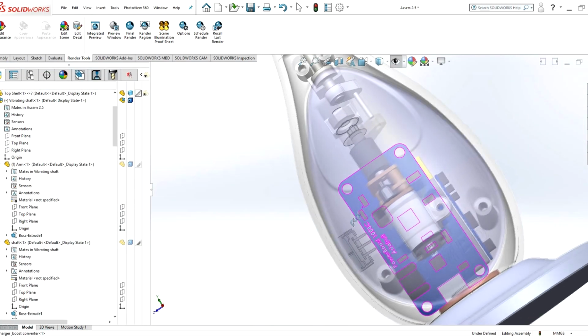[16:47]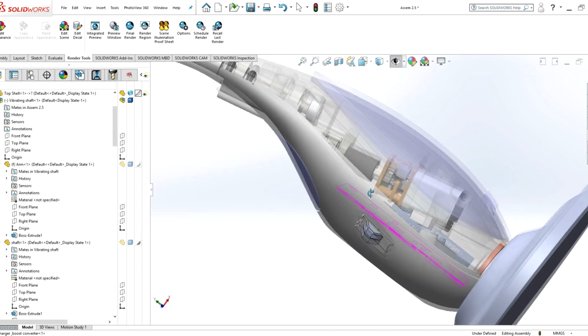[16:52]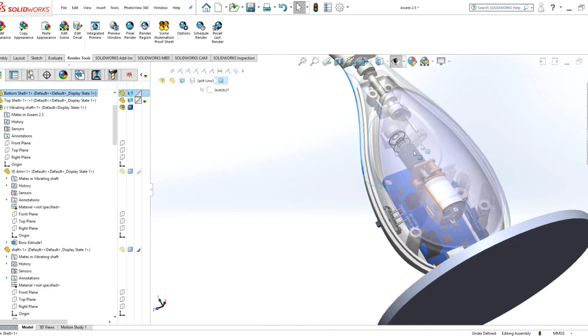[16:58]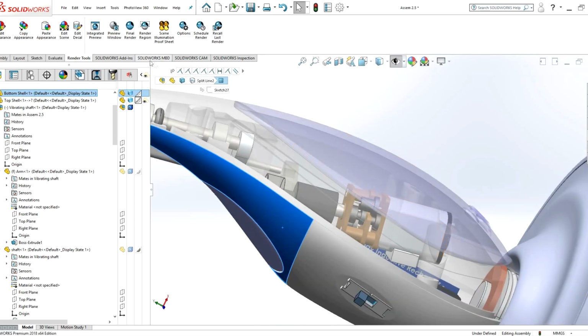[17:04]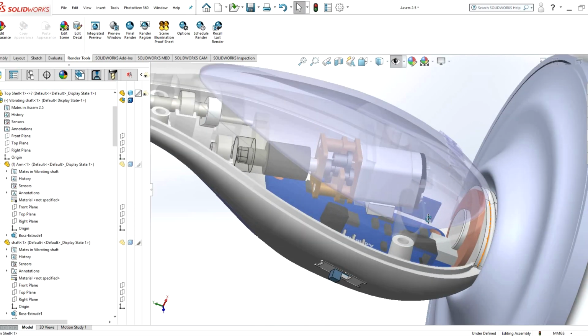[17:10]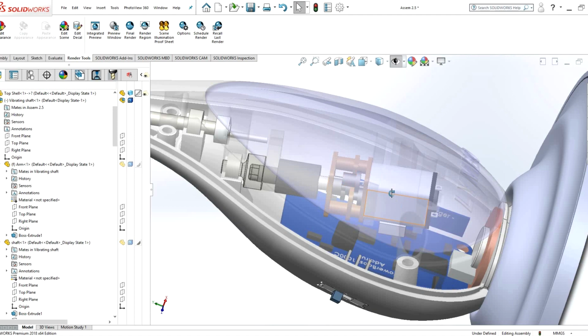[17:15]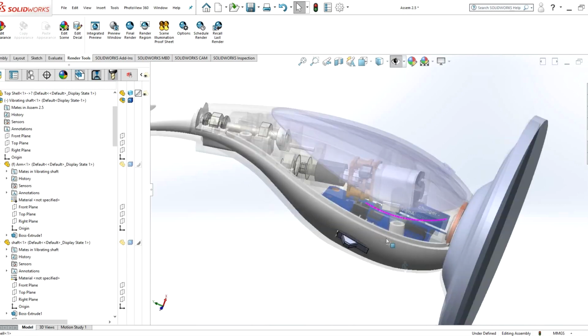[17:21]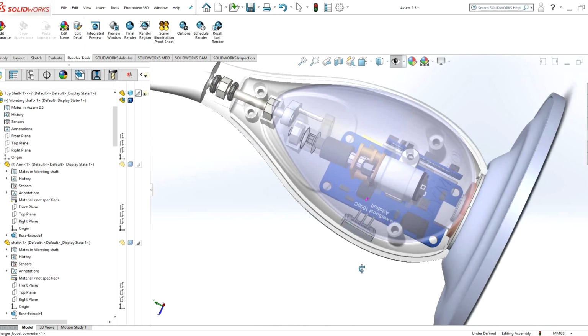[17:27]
Now this is where it ended up. It took me a little while to get to this position. Essentially I would have my rough model, and then I would manipulate my components and place them in different sections and see if everything would fit. Do interference checking in Solidworks. I might demonstrate that in some other videos later on. It was just an iterative process. So maybe one day I would make sure that the motor would fit in place. And to do that, I might have to extend the length of the body and manipulate the width and the form, till eventually I got to a point where I had everything in there.
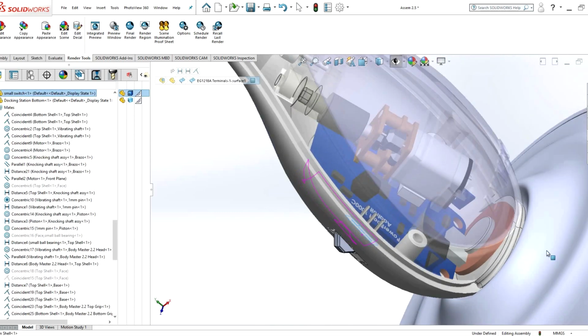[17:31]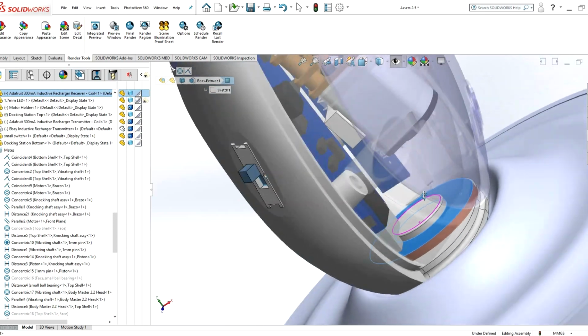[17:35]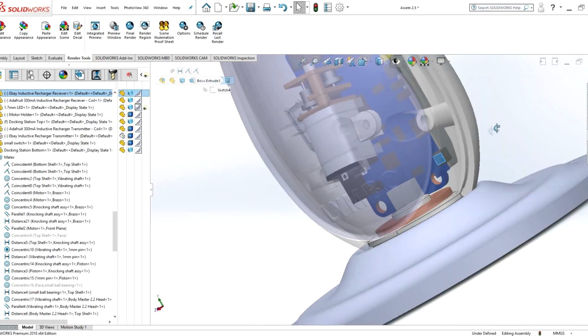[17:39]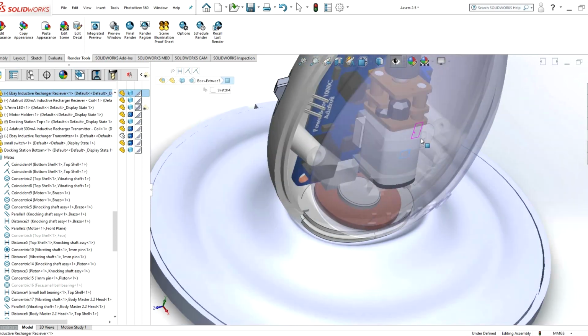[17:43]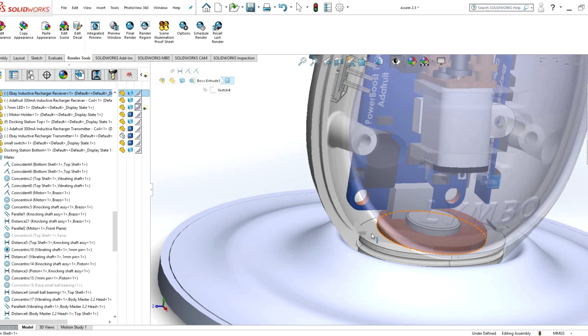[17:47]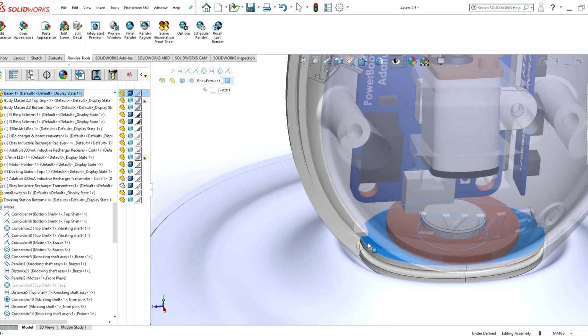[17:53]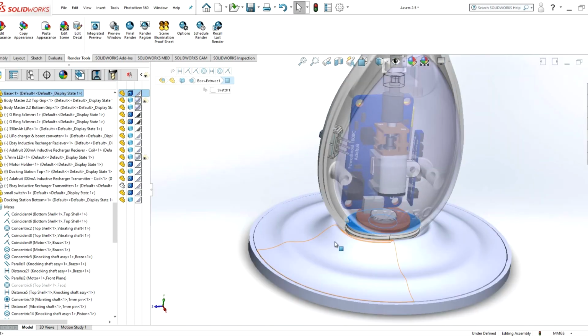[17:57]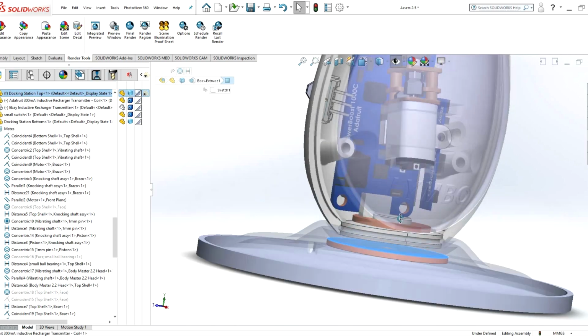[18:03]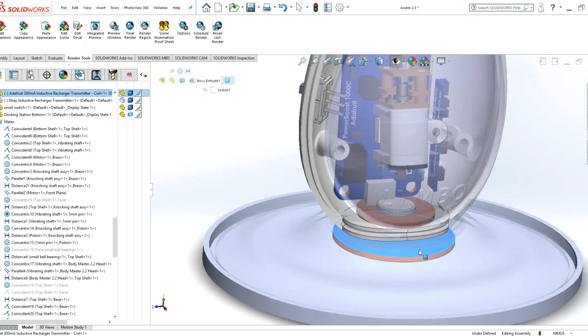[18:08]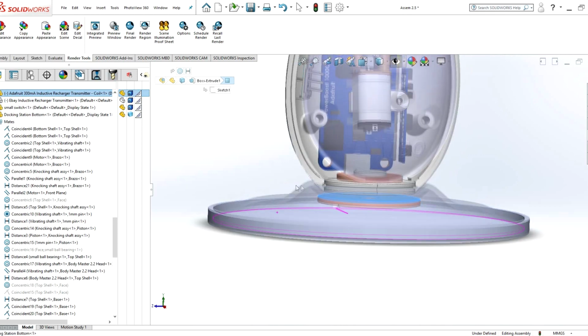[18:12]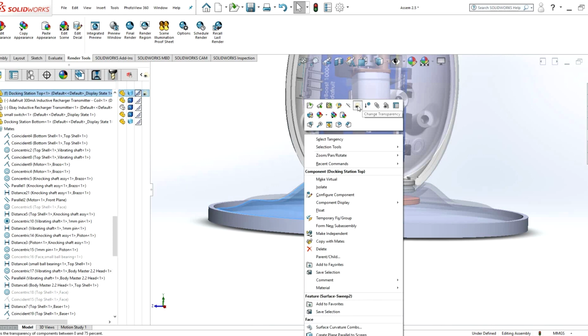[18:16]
So this was just a little power on and off switch. This down here is the coil for the wireless inductive recharging. And this was the little circuit board that came connected to the coil. Besides that, there was this other piece on the bottom, like a third part of the body, that probably in hindsight wasn't necessary, but it was just one way I went about designing it. And finally, I had this base piece. The base piece also had the other recharging coil in there, which was wired to a power supply.
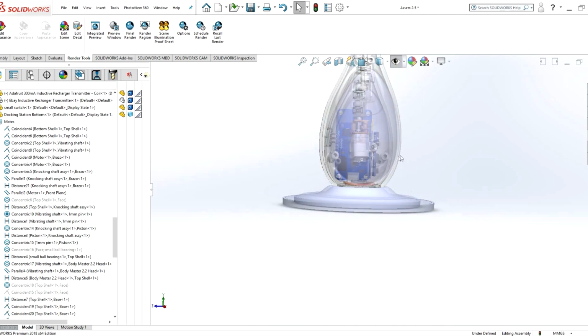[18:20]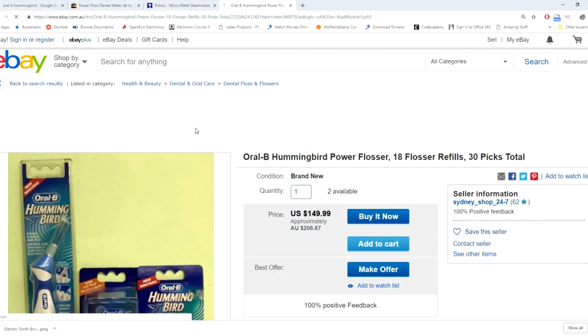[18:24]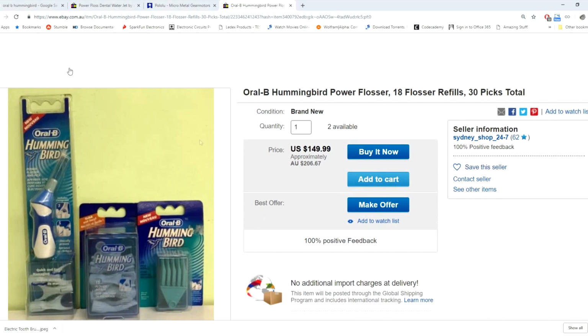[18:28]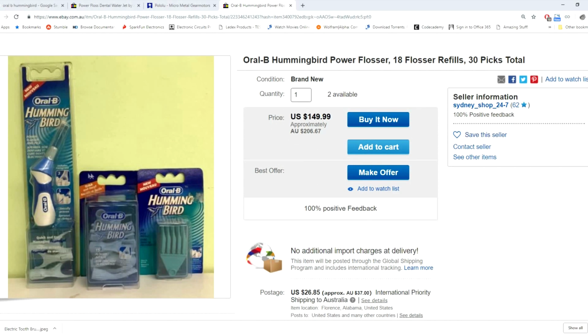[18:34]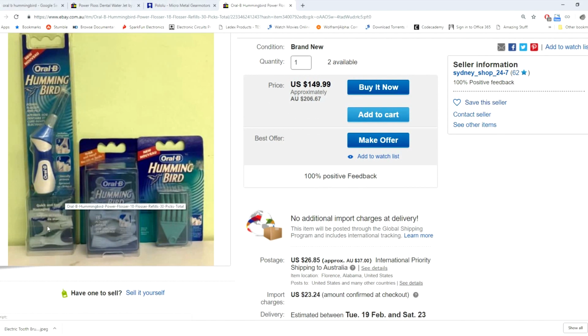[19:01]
Essentially, when you place these things next to each other, the thing would automatically recharge. So compared to the Oral-B Hummingbird, the other flosser that was on the market, that was just powered by a single AAA battery. I did actually order one of those Oral-B Hummingbird units off eBay. Some people sell some old stock, and you can see that the price is quite crazy now, $150 US. Upon opening this thing up, it was quite good, but one negative thing I found was that because it was just powered by a single battery that had this screw cap on and off, I think it wasn't completely protected from the elements or protected from water per se. And I found that the contacts on the battery weren't so good. There was a bit of rust and corrosion. So that possibly could have been an issue with this unit, and perhaps they didn't want to redesign it, so it was more cost effective for them to discontinue the model.
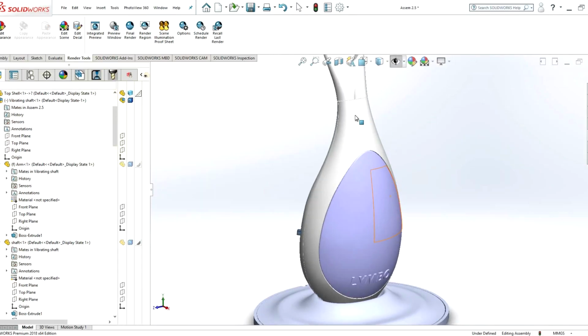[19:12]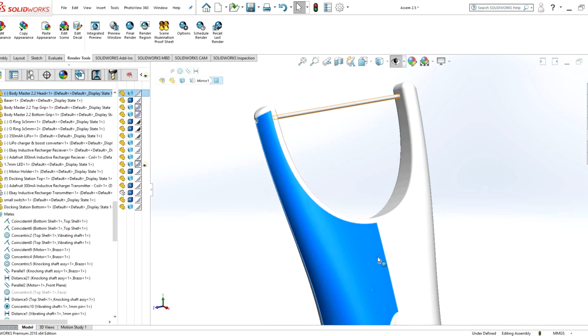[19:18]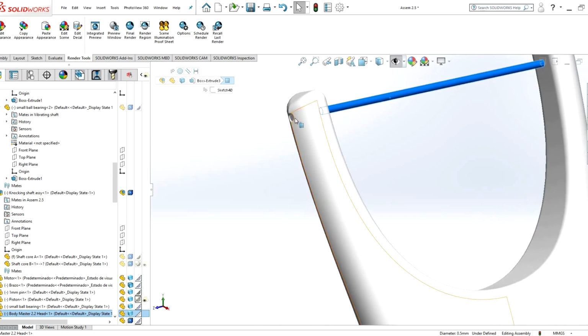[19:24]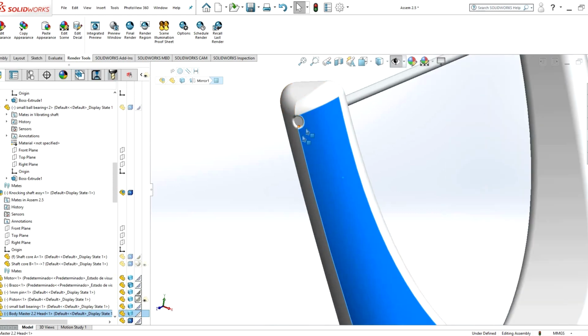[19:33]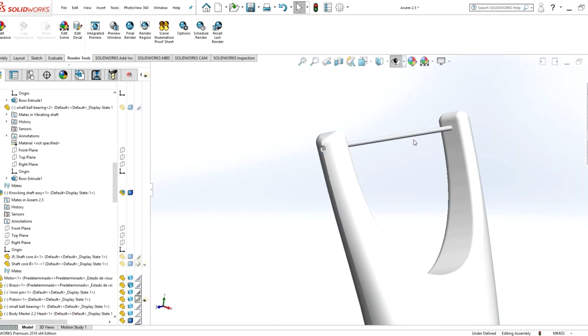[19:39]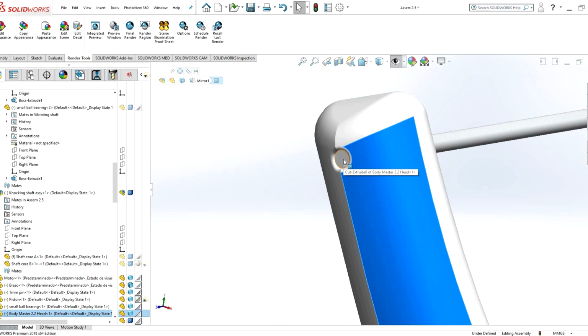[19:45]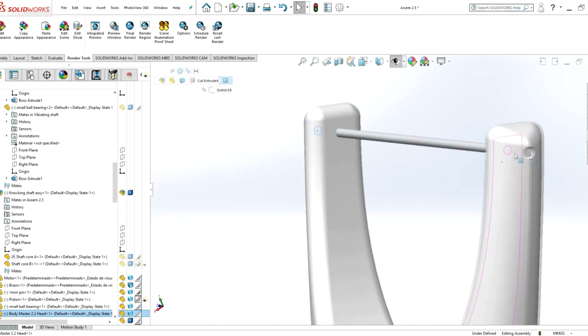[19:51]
So yeah, a couple more important points. The removable floss head would be a disposable thing, so they would just clip on and off as discussed before, and the floss would be embedded in the plastic. The idea was that when these pieces were injection molded, the plastic would be held taut in the mold and it would flow over it. I think that's commonly done in disposable floss picks. To prototype that, it was kind of hard. I think what I did was with one of my 3D prints, I drilled a tiny 0.6 millimeter hole and fed the floss through with a knot on one end, and then on the other end tie together another knot, but it didn't really end up being super tight.
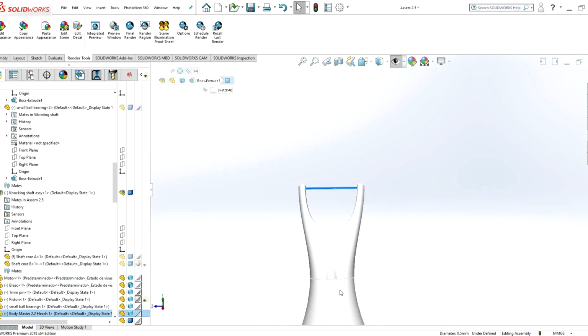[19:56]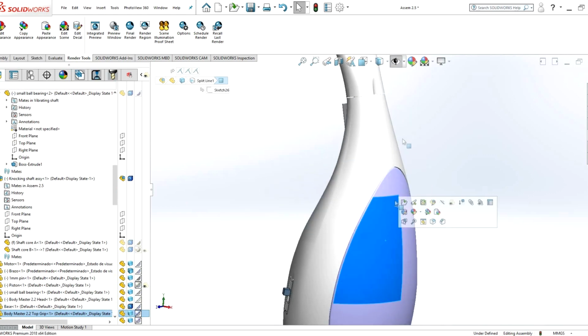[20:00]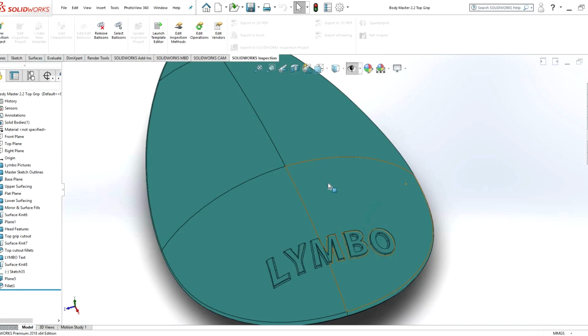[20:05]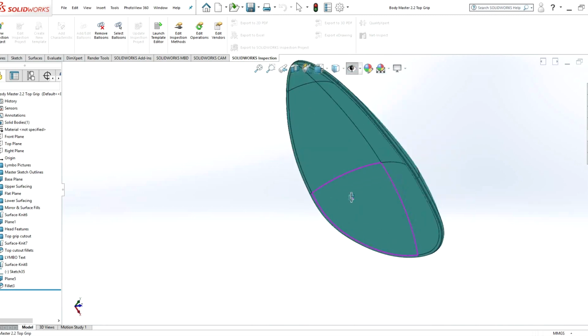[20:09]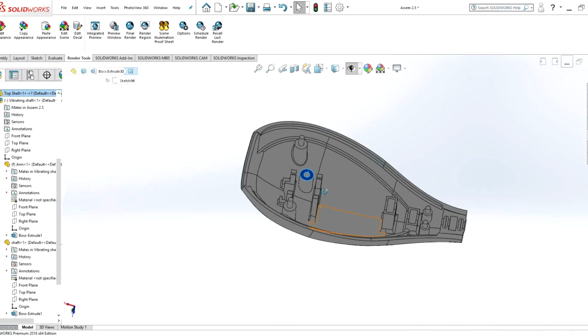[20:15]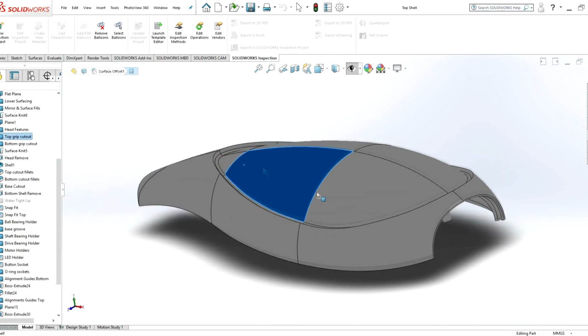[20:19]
These are blue pieces. They were actually some little silicone grips. If I just open one of them, you can see it was sort of a shell shape, made out of a rubbery silicone material to give the unit a nice feel. And if I open up the top shell, on the exterior surface we can see this big recess, this big indentation where the seal would sit.
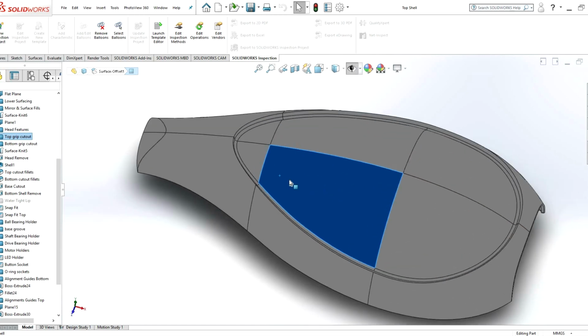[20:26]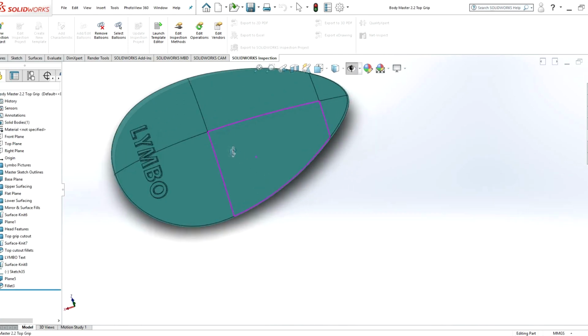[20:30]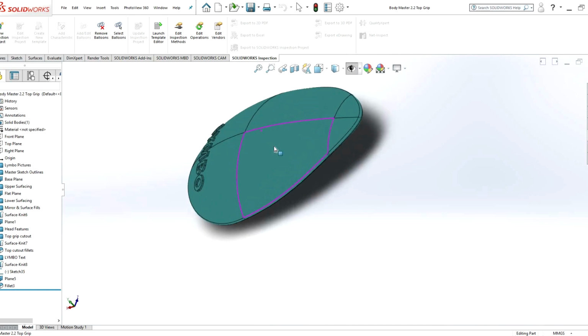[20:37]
To actually make that, I made a mold, which was the inverse of the silicone grip. And then I bought some silicone mixture with some blue dye, mixed it together and injected it into the mold. So that probably deserves its own video of how to do that.
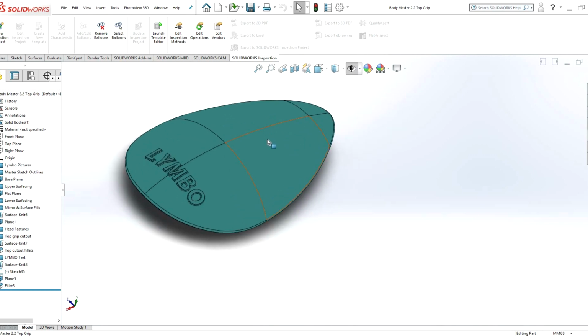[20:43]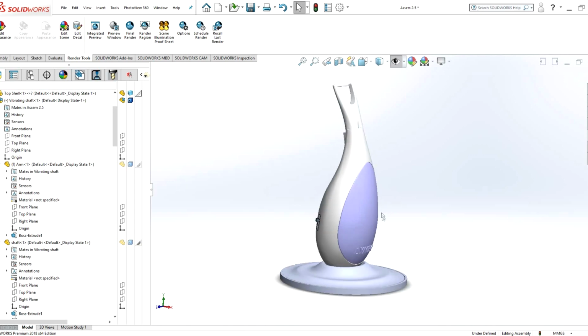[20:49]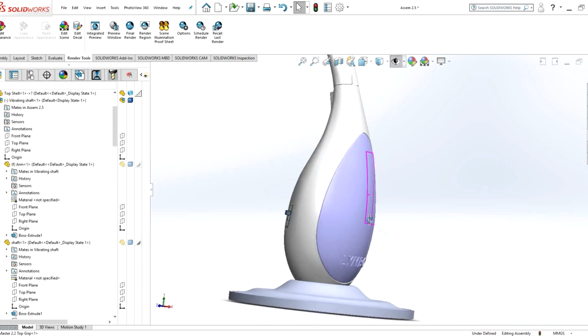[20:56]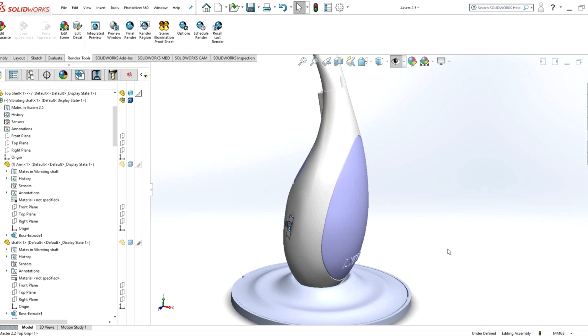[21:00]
If that was going into mass production, that would just be overmolded in the plastic injection molding process, which is a technique of combining a softer material onto a harder plastic.
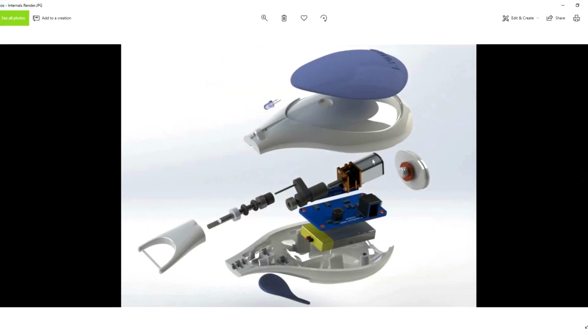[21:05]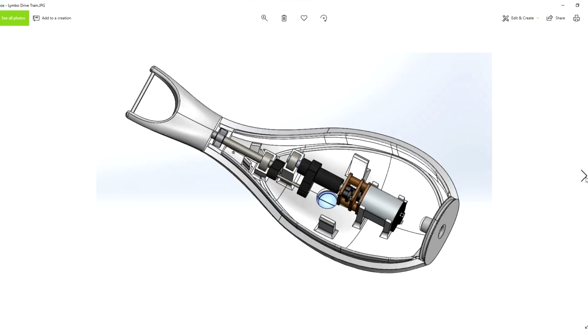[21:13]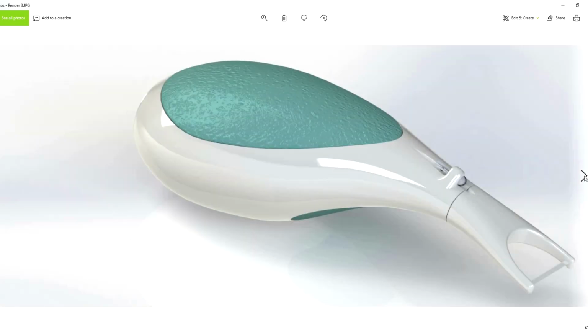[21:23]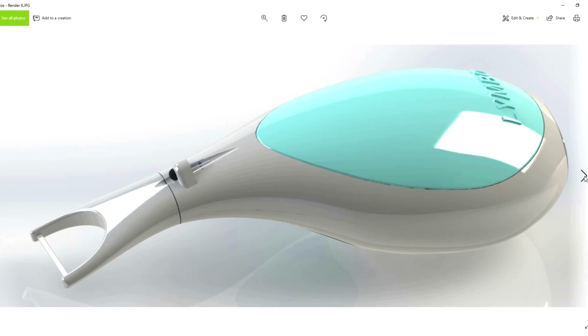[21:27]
And I produced some renders of this unit. This is an exploded view of the model and all the internal components. Some other images. I think this was another model where I was thinking of having the LED on top, but it turned out that it was more useful having it on the underside of the model. Just some general pictures.
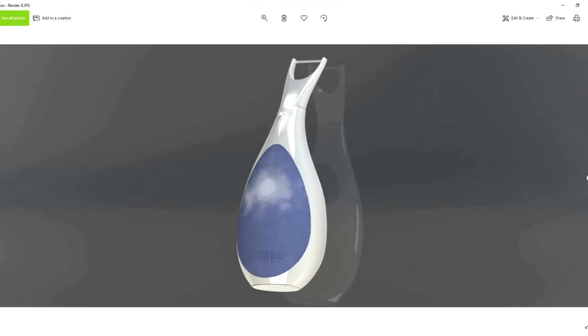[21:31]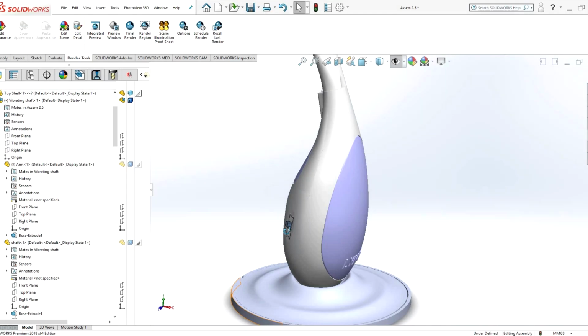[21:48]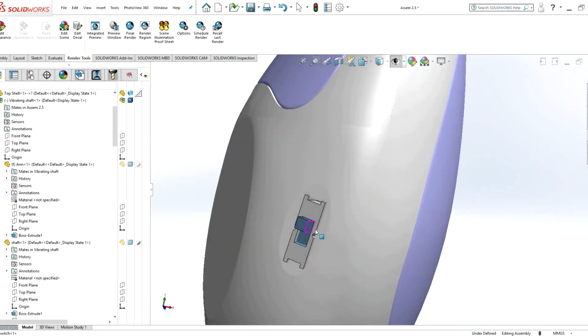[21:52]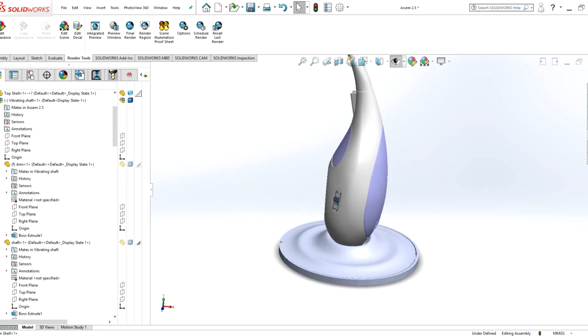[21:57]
I also did plan on having the power button to turn the thing on and off underneath the silicone grip or TPE grip, but that was more difficult to prototype. So for the initial prototype, just having a switch on the side, as shown here, was easier, and it didn't really detract from the overall evaluation of the concept.
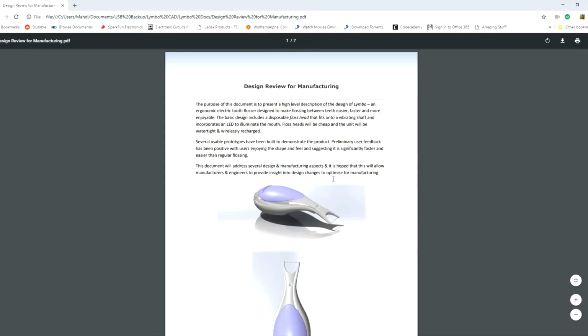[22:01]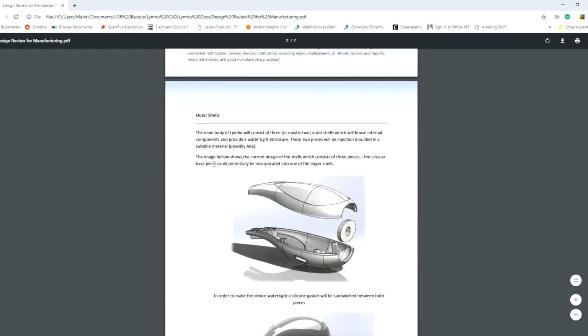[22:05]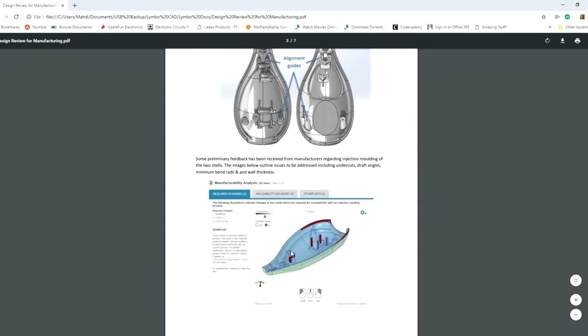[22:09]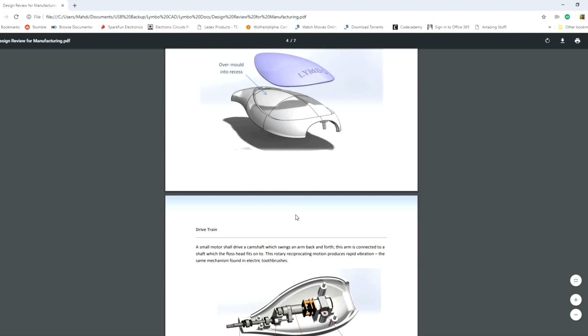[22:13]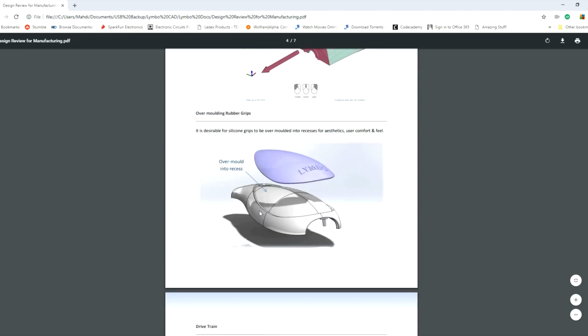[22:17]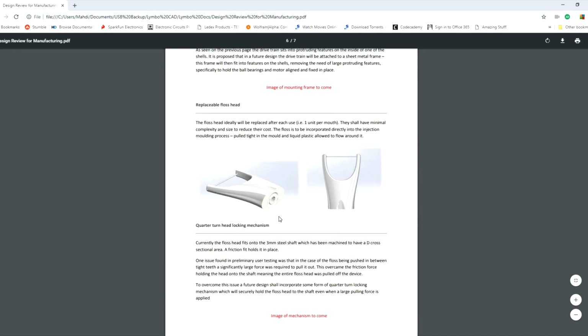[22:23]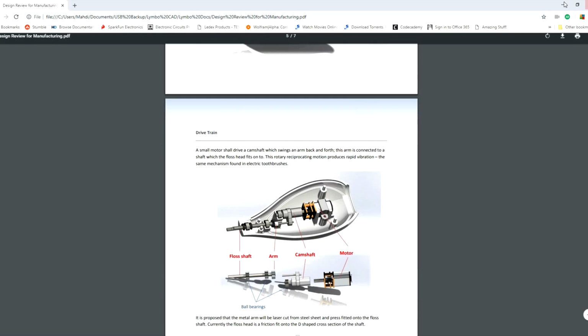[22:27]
I also had this document I put together, which was a kind of design review for potentially getting this thing manufactured. I'll share a link in the description below if anybody's interested and wants to have a read of this. The plan was to get the pieces plastic injection molded with an overmold of the grip. This is just a brief document, so feel free to give it a read if you're interested.
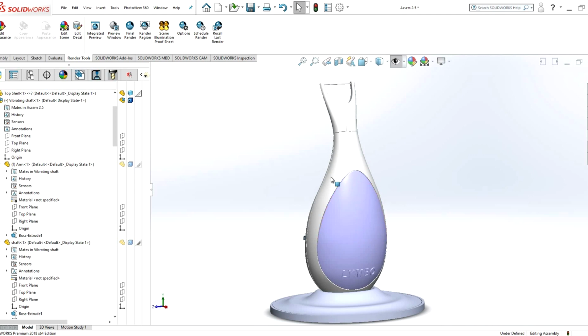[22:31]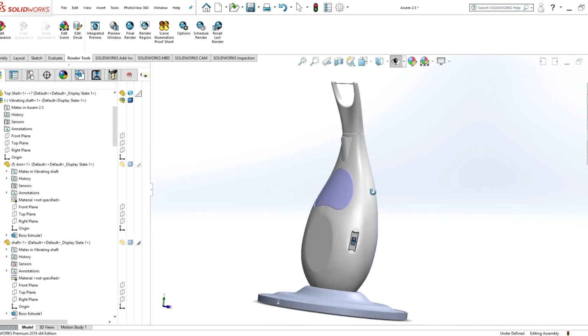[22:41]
Now talking about how I actually physically made a prototype of this, I decided to go with 3D printing. It's quite a useful way of rapidly prototyping small objects. I don't own a 3D printer myself. I don't really have the space for it in my home.
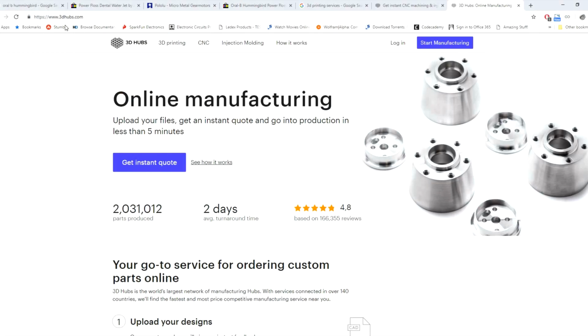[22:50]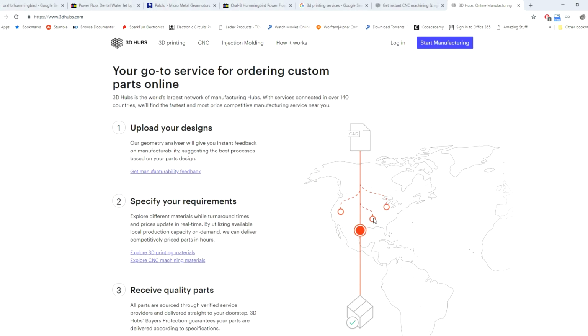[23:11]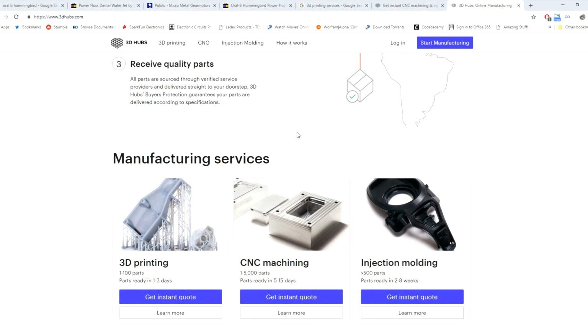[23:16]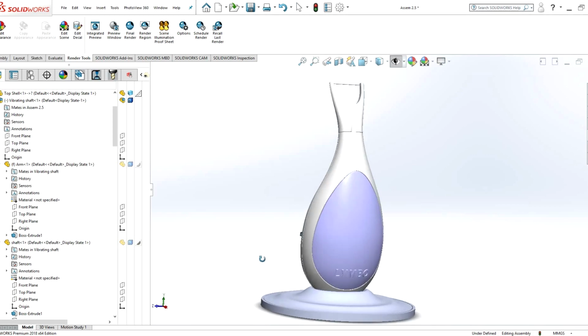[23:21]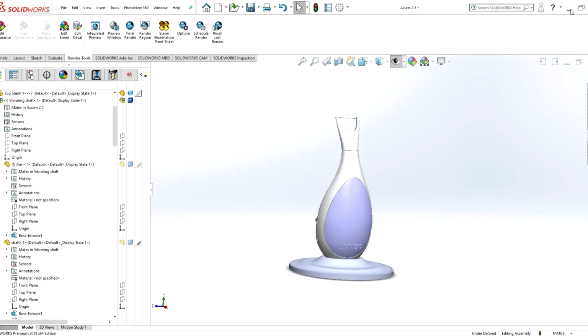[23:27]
But I was aware of this website called 3D Hubs, which, back when I used it several years ago, basically consisted of local people in your city or area that had various equipment like 3D printing machines or CNC machines, and you would upload your designs and get quotes from various people, and then choose the services you want. For this piece, I wanted it to be pretty high quality, so I decided to go with SLA or resin printing, which is also watertight and 100% solid.
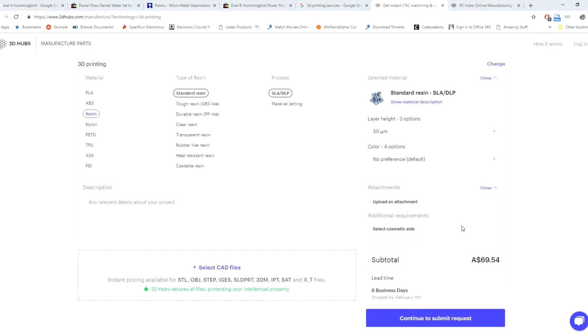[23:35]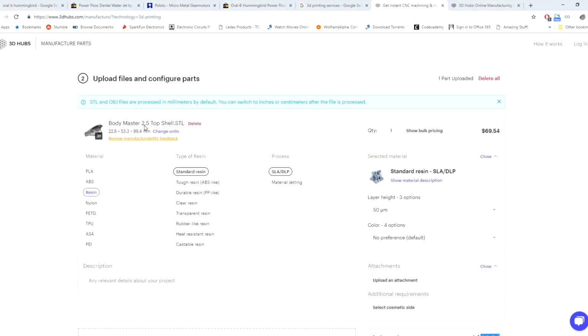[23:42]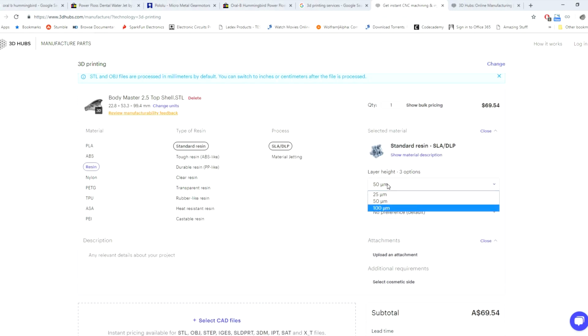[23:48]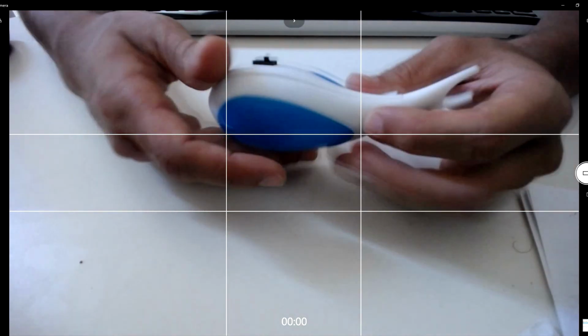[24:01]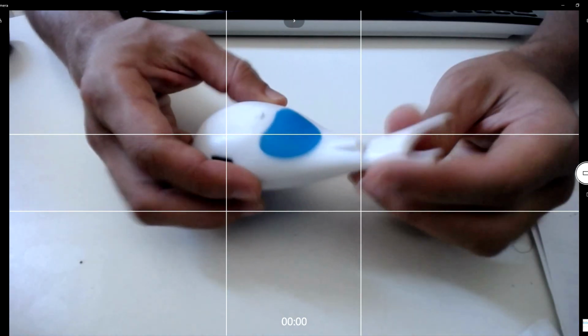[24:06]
So I uploaded my files, selected resin SLA print, and it would give me a quote. Getting things prototyped is quite expensive. This actually looks more expensive than what it should be just for a single part, but I haven't really played around with the options here. For example, if you change the resolution, it should be a little bit cheaper. But nevertheless, prototyping is always going to be more expensive per unit than final manufacturing. All these pieces were 3D printed using SLA resin technology.
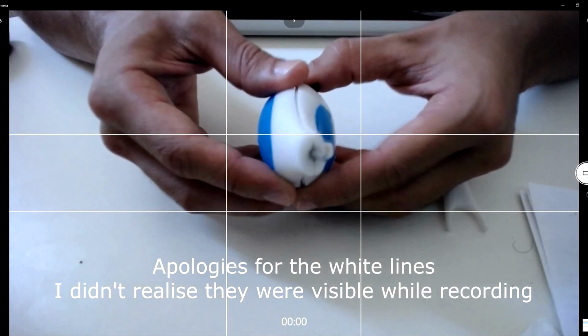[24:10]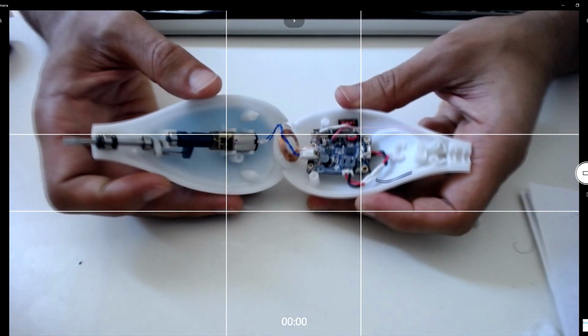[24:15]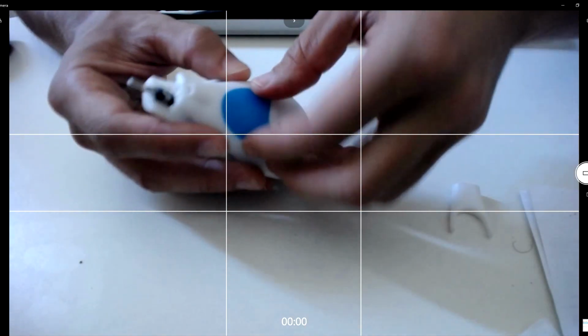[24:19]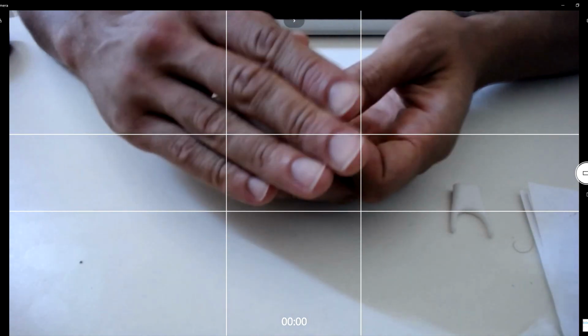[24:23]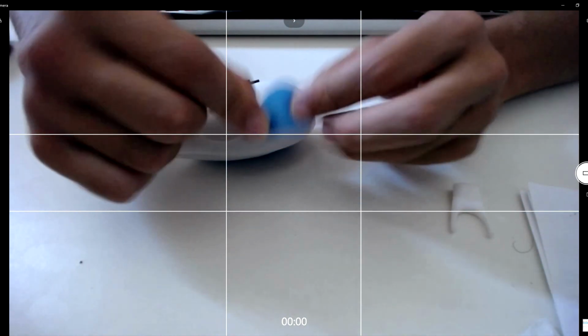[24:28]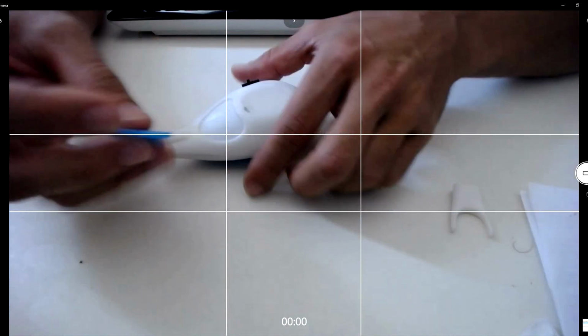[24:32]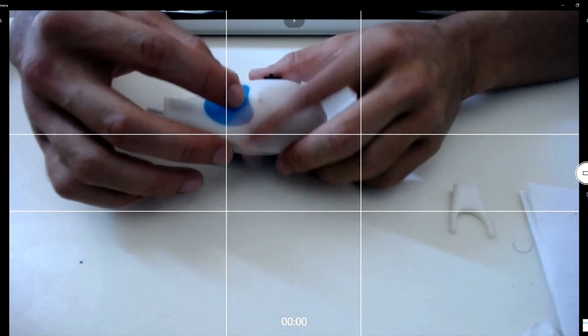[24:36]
I'll just take these apart in half there. Also, as I mentioned, the silicone grips. These were a two-part mold that came together, and I injected the silicone inside, let it cure, and then took this out. I'll definitely make a video about doing this in the future and how to make it decent quality. And the plan was to just glue them in place in their respective parts.
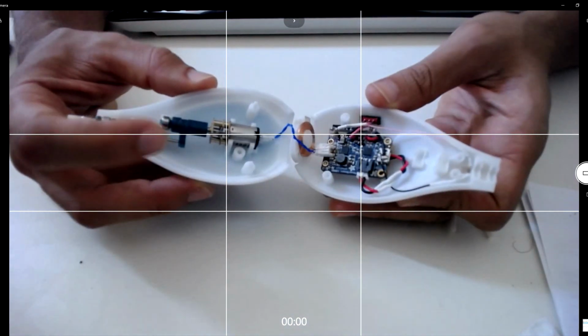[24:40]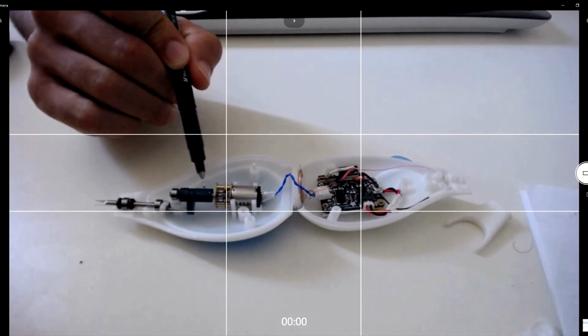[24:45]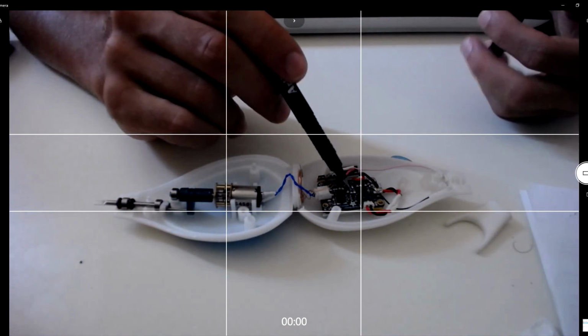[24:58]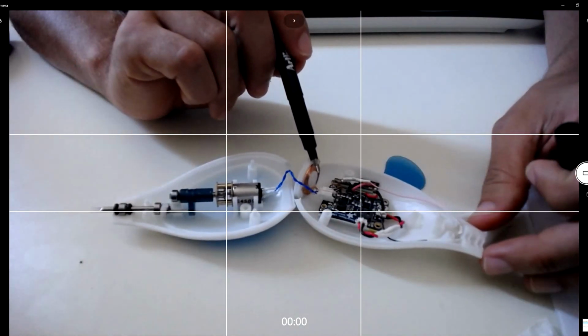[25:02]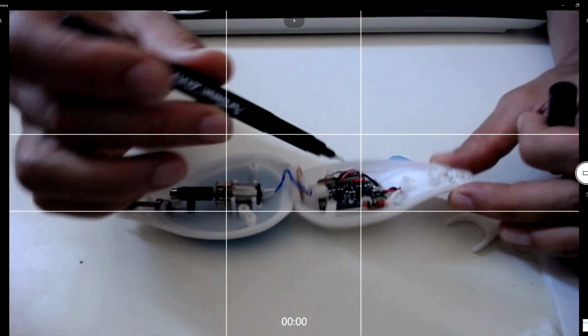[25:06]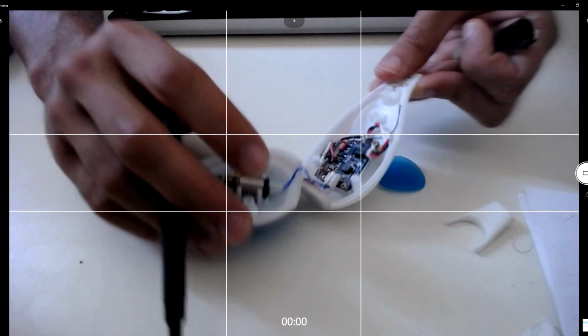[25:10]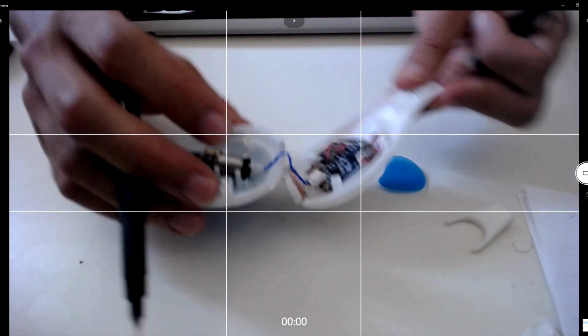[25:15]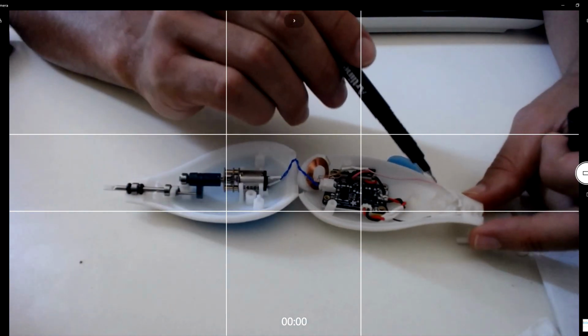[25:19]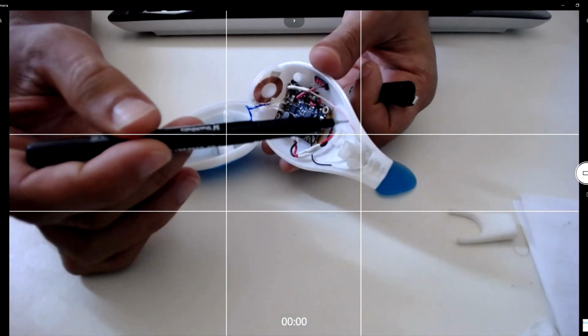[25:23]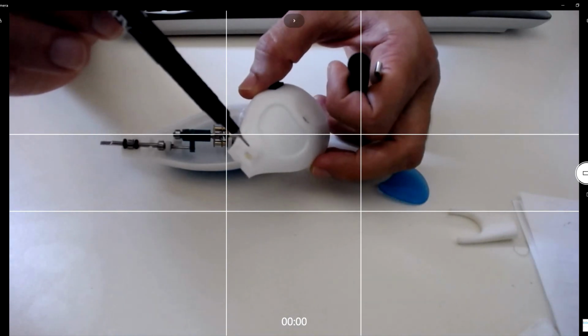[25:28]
Here we can see the little micro motor that's connected to the knocking mechanism, or the little camshaft, which drives this little arm connected to this steel pin on the shaft. Here we have the circuit power regulation board connected to the inductive recharging coil. Underneath the board we have the lithium battery, which is not really visible here. You can just see the yellow tape of it there. And the micro power switch, and then little power leads running up to the LED. These power leads here, and the LED is just positioned in there.
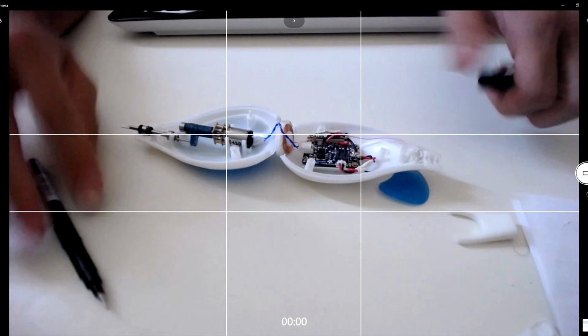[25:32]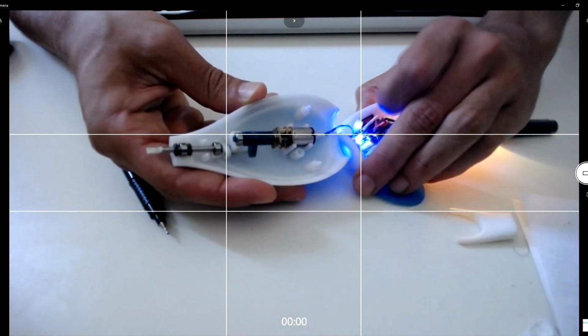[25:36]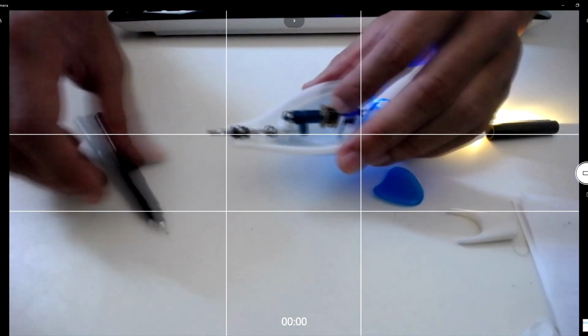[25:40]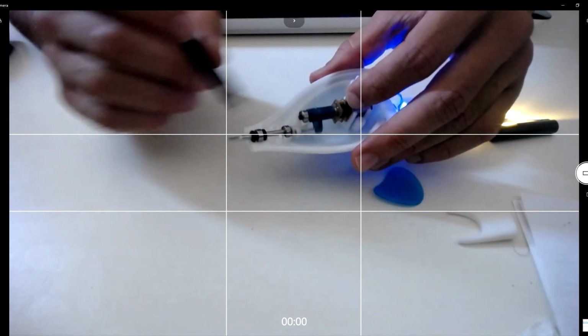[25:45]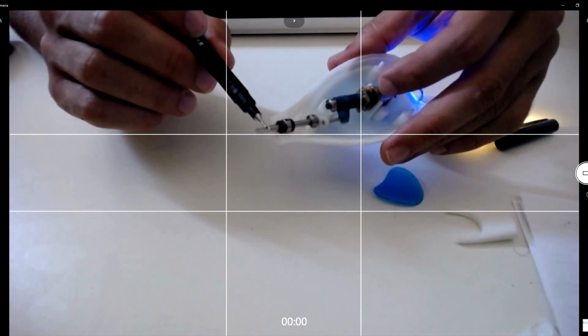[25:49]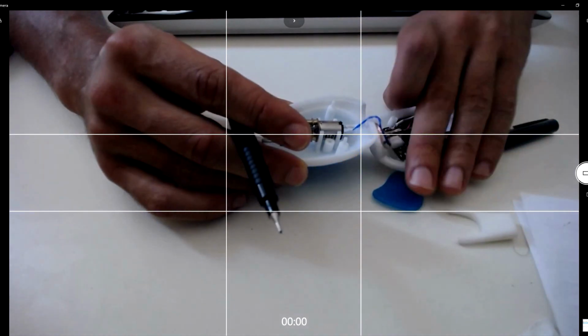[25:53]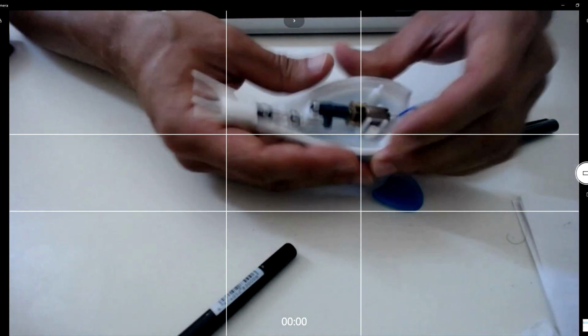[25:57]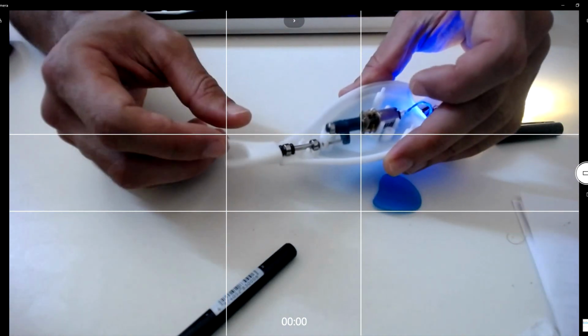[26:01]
So if I turn this thing on, you can't really see it on the camera, but this shaft is vibrating. If I hold this metal pen next to it, you can hear it. Just turn that off. And then when the head is in place, it causes vibration of this head.
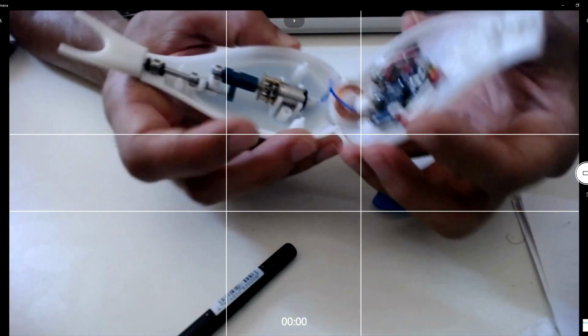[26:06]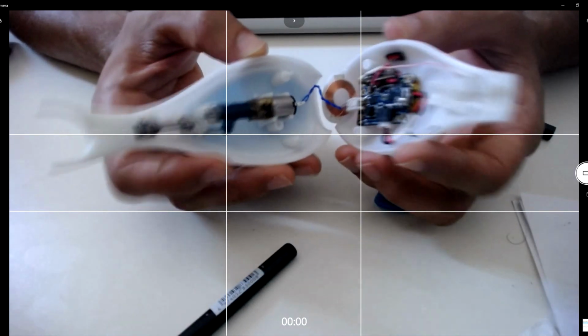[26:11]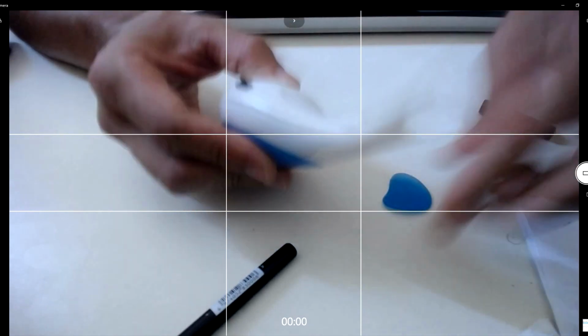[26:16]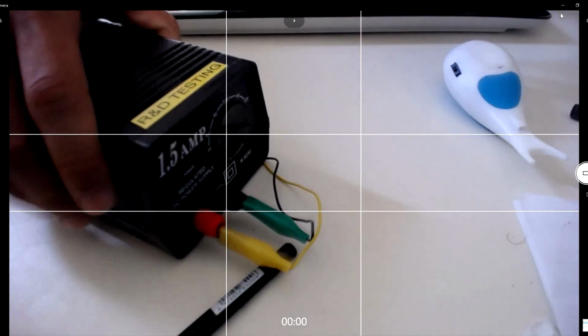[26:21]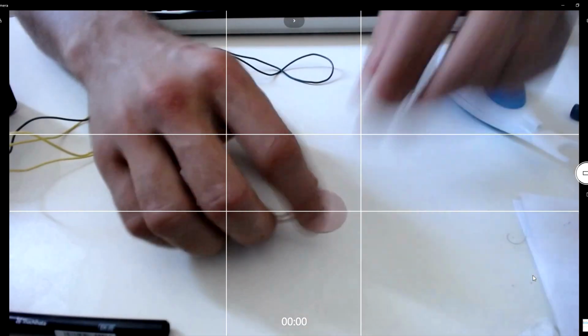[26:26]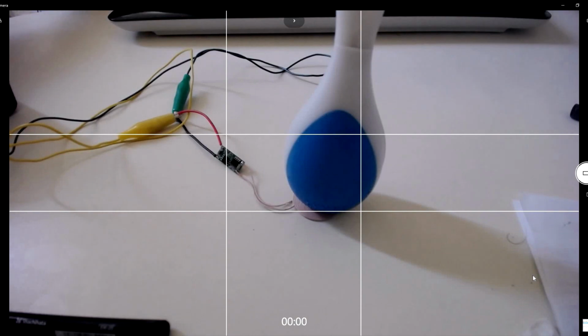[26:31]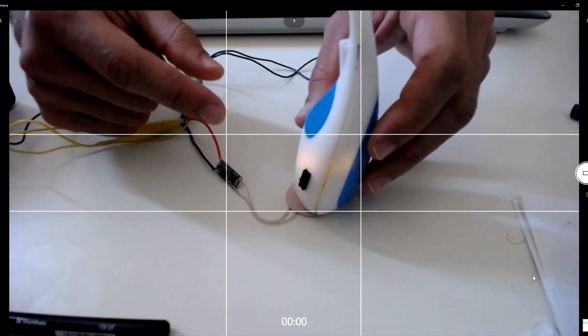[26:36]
So also, as I mentioned, this would be permanently bonded together, but because this is a demonstration unit, I didn't actually do that. Clamp it back together. So I have my little DC power supply here, and some power leads connected to the other end of the recharging unit. As I power on the power supply, you can see that an orange light comes on inside, which just means that the thing's recharging.
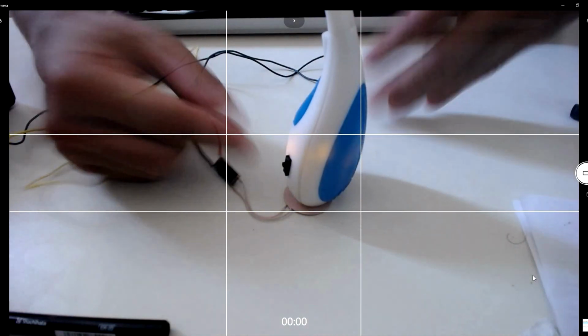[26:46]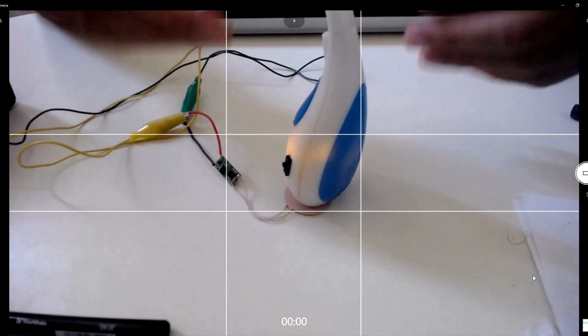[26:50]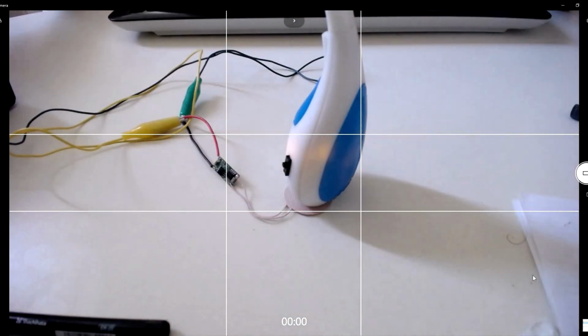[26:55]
If I lift it off out of range, it loses contact. And when this is done charging, a green light would come on. So this is indicative of what the final unit would be like, but obviously it'd be more robust and packaged together in a sealed unit.
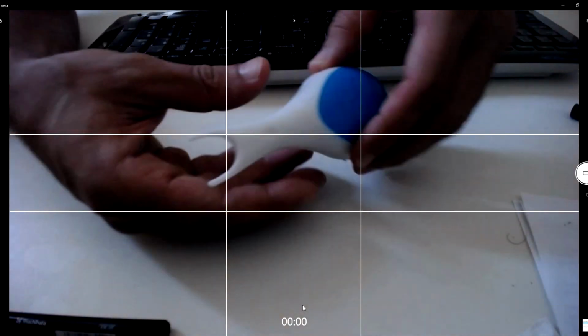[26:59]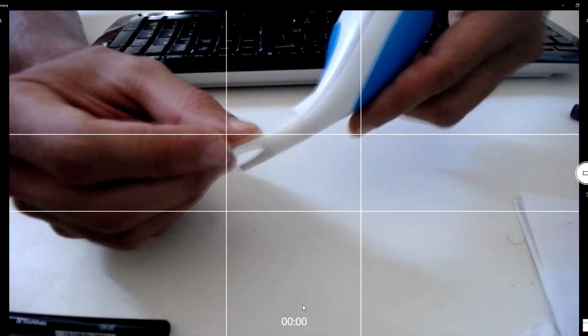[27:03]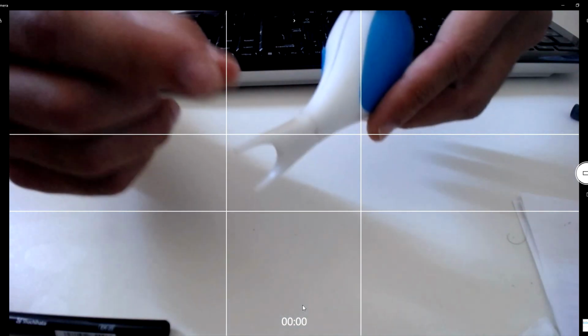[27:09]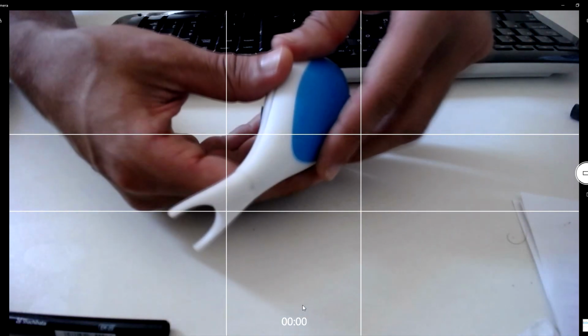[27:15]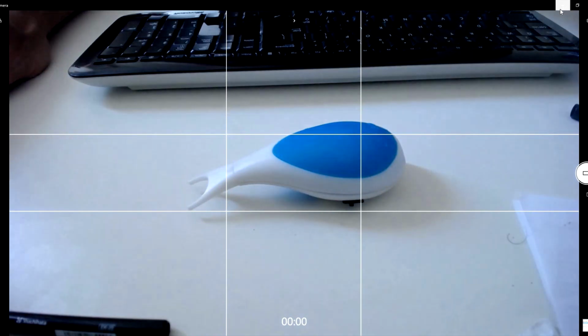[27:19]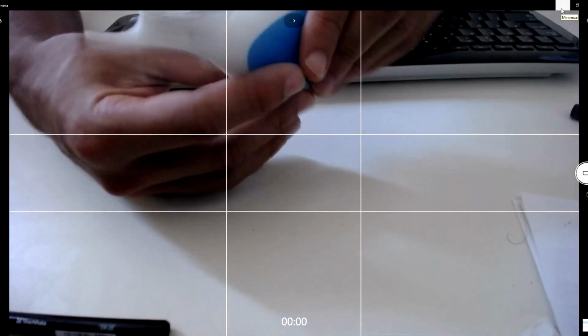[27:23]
So I also had to do some basic machining along the way. You're not going to be able to see this on the camera, but I drilled a very small hole in there using a drill press, and it was actually a drill bit used to clear out 3D printer FDM heads, or extrusion nozzles. Moving on to the testing of this, or the user feedback,
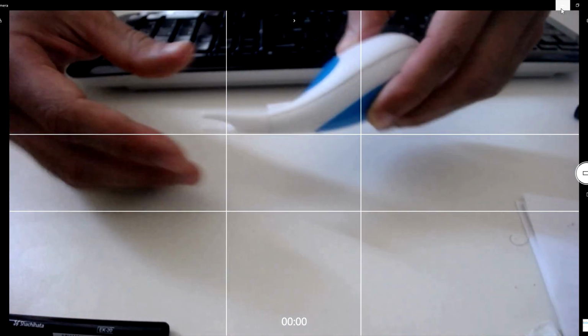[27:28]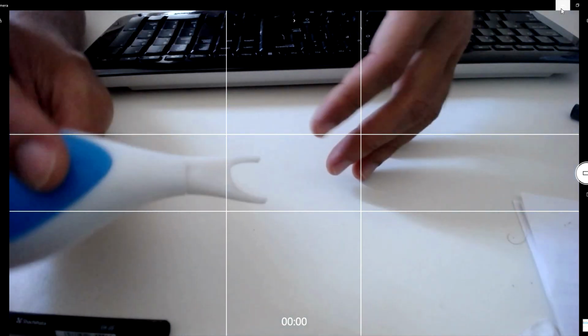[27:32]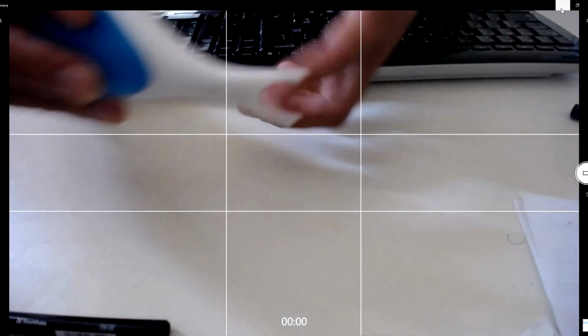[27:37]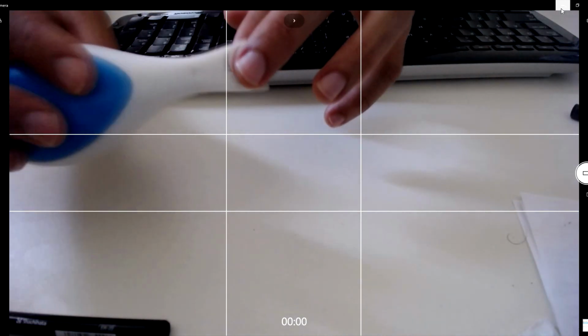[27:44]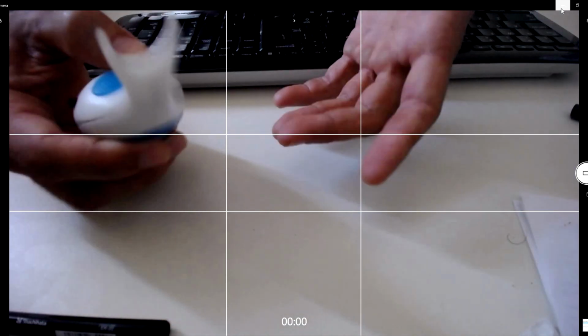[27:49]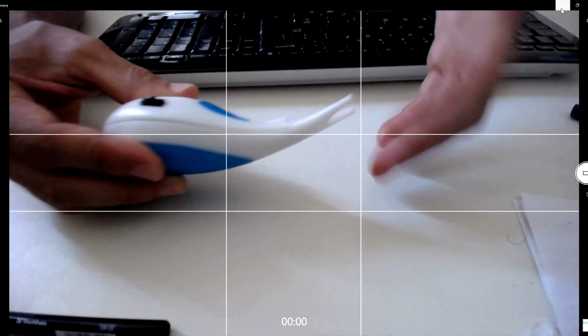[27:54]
people did actually, so I think I had about 5 or 10 close friends and family try it out, and they thought it was pretty good. Like, it was easy to sort of get inside the mouth. The light helped illuminate the teeth, and you could see what was going on. The vibration sort of helped the floss glide in between the teeth. And overall, the experience was positive, also because it's like a little cool electronic device that motivates people to floss more and practice more dental hygiene practices.
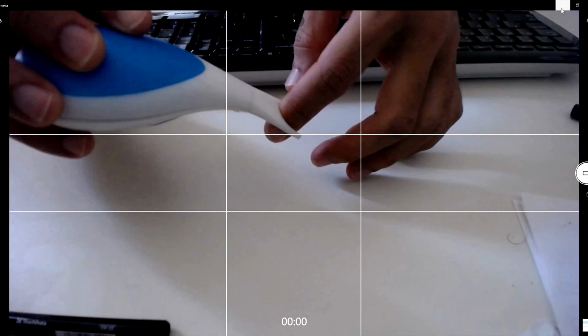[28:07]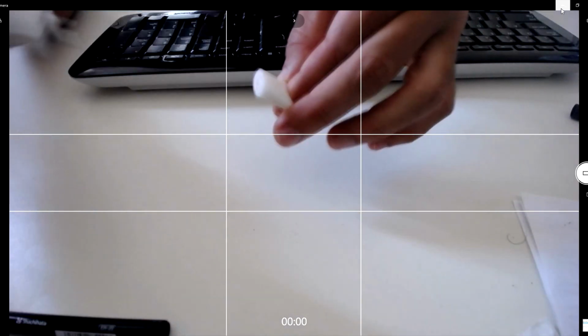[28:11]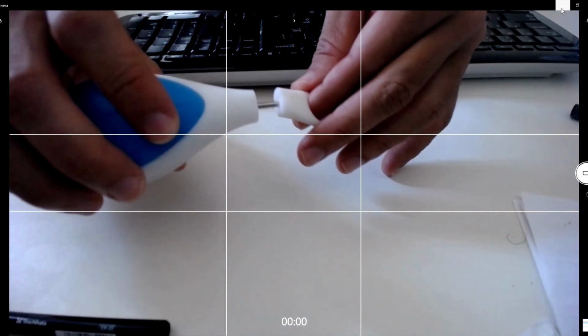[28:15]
One negative thing I found, and this was actually testing it on myself, was that if you pushed it in between teeth and the floss sort of got wedged in place, when you pulled it out, the head would tend to come off, and then this would be stuck in between your teeth. So that definitely needed to be fixed.
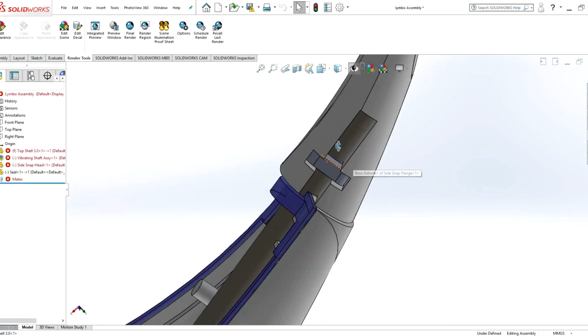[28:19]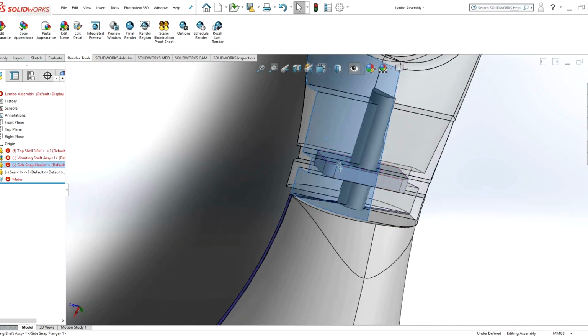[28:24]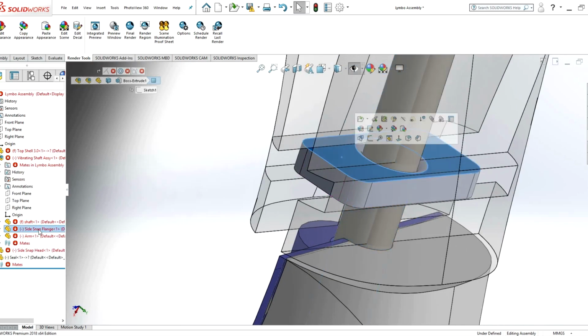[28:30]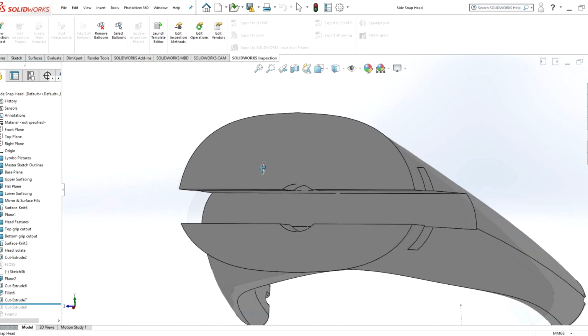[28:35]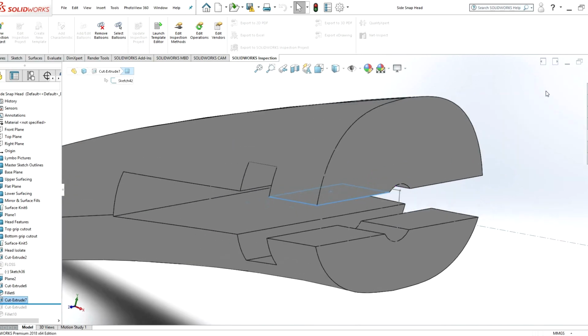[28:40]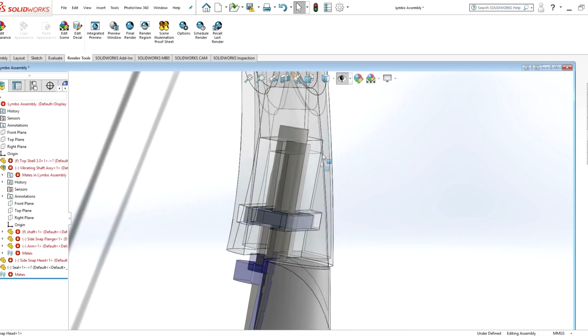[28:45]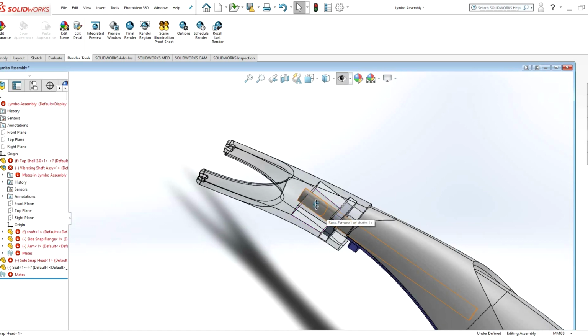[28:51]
So I began looking at a different style of design, one where the floss head would sort of slide in sideways, and this metal shaft would have another solid metal piece bonded to it. It would sort of be a snap fit mechanism in that you'd have this small channel that it would pass through to get on there. And then once this was on there, obviously any sort of upwards or downwards pulling force, any force along the axes of the shaft, wouldn't pull this thing off, so it wouldn't get wedged between your teeth.
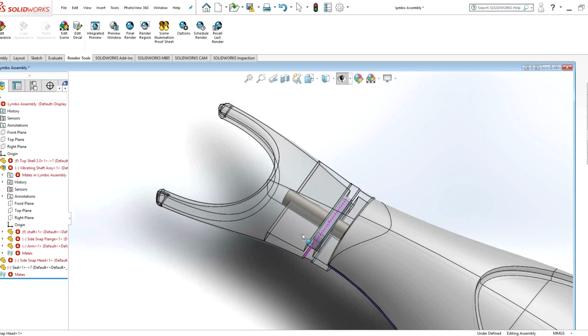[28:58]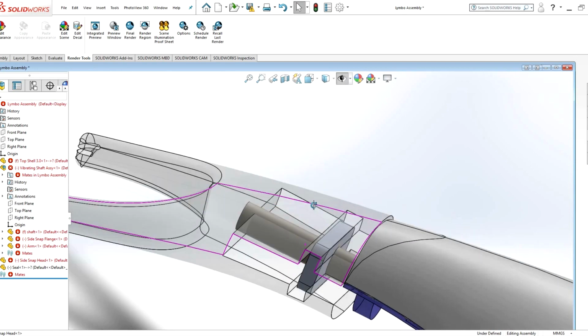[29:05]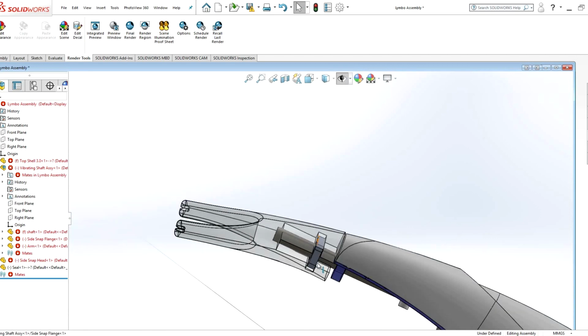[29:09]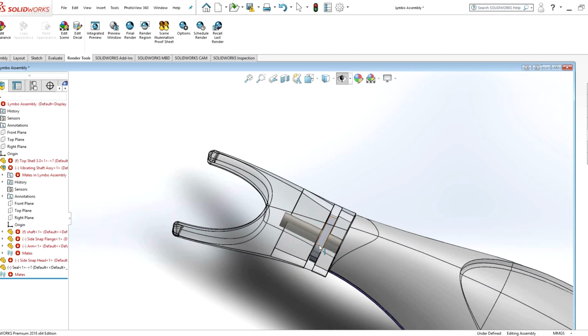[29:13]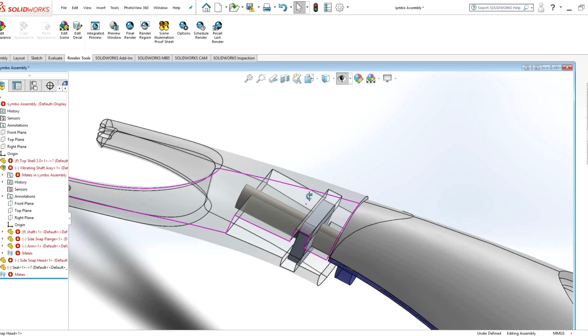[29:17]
And to get it off, you would just move this thing sideways, maybe use your thumb to pop it off. And a lot of this stuff, like snap fit assemblies, you need to kind of experiment with the final material you're using and the manufacturing process. So this was just a concept, and I stopped working on the model around here, so I didn't really develop this further.
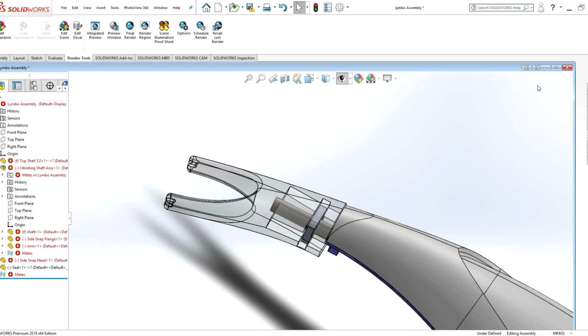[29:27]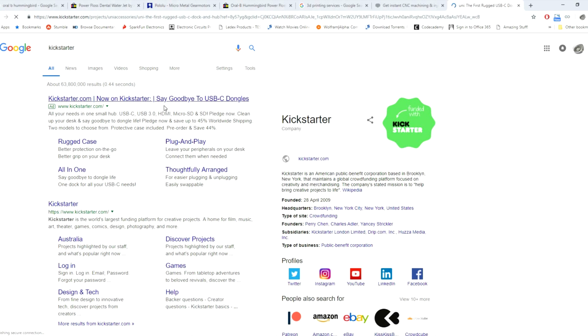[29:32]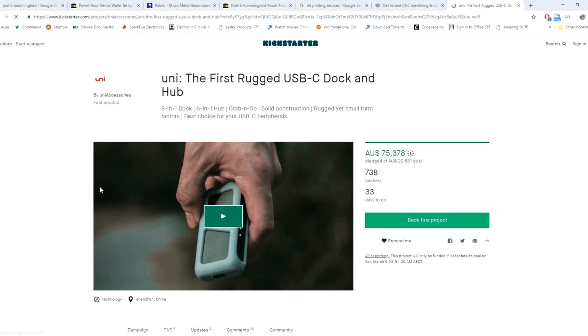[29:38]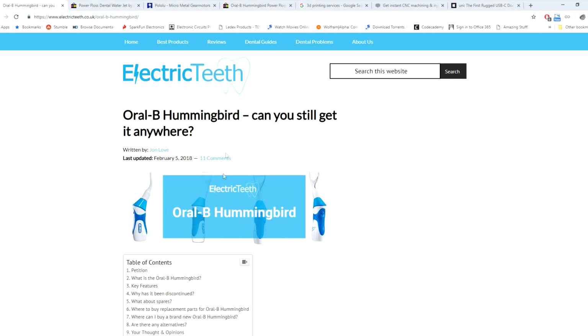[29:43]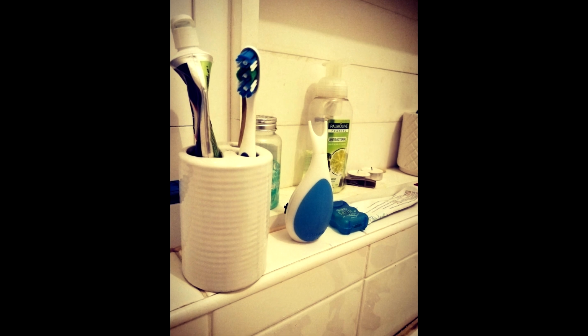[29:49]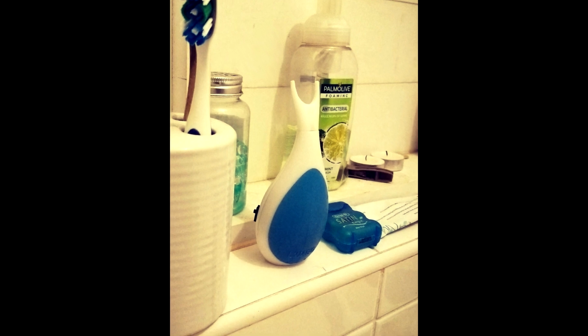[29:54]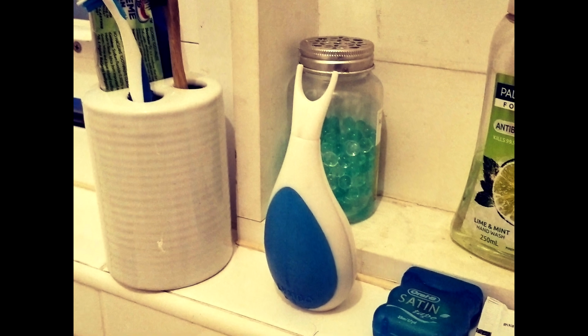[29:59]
I think now I'll actually talk about why I did stop working on this and why I didn't try to take it any further. The idea was to put this thing on Kickstarter as a new, novel kind of product. It was similar to the Oral-B Hummingbird in the past. As I mentioned earlier, it seemed like there was still a desire for the Oral-B Hummingbird. So, I felt like I was at a level where I had a working prototype. Could have produced maybe 10 of these, maybe 20 by myself, but I could have got some other people to help me out to make some more.
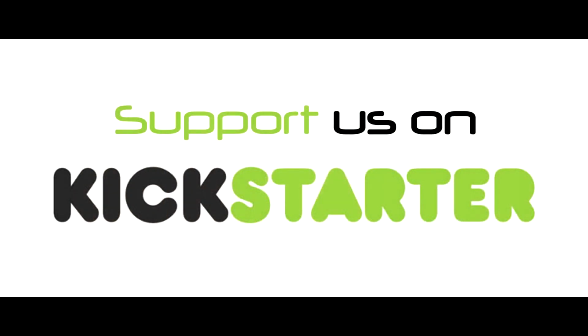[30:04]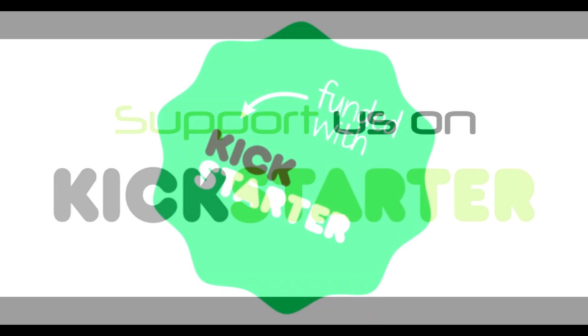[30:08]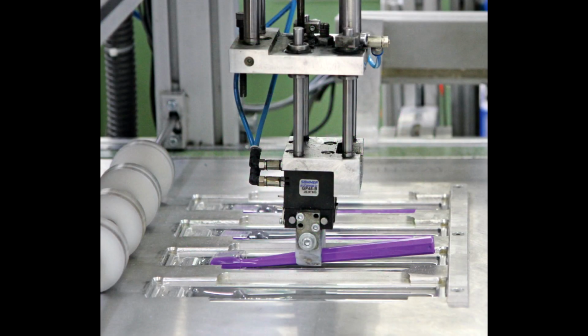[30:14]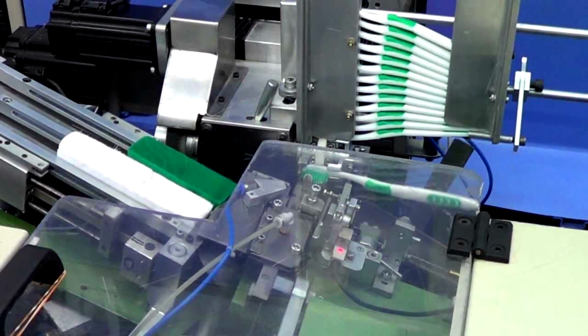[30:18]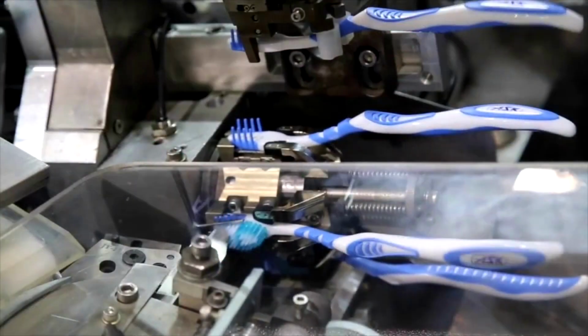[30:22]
And then I'm sure you know how Kickstarter works, but you have a goal, and once we raise that goal, look to going into final manufacture with this thing. To manufacture this, the plan was to go to China or approach some Chinese companies, and talk with them about what they would think would be necessary design changes. The plan was to just use injection molding, with standard materials like ABS and whatnot.
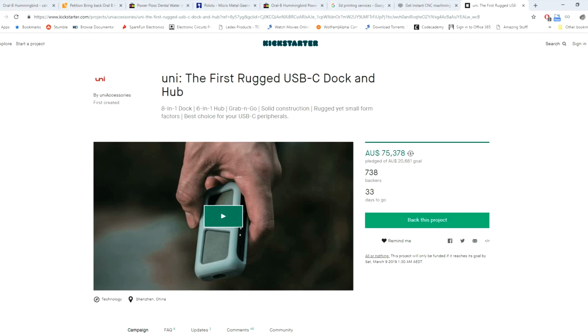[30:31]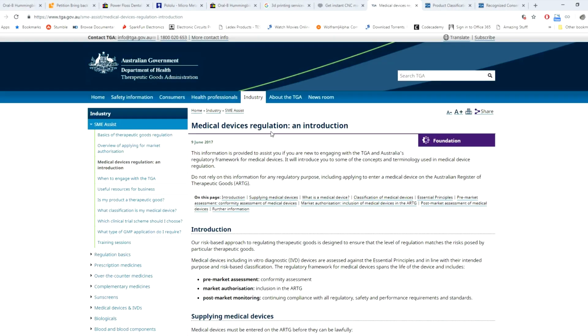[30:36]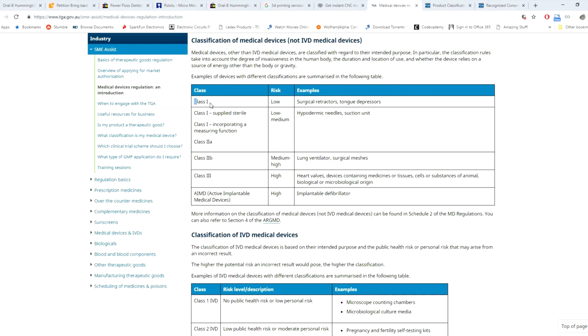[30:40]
So I started looking into medical device classification and regulation. Medical devices come in a range of classes. Class 1 is the lowest risk, things like tongue depressors, which are basically wooden popsicle sticks used to lower a tongue, all the way up to active implantable medical devices, things like defibrillators, things that monitor your heart, or brain implants, very high risk things.
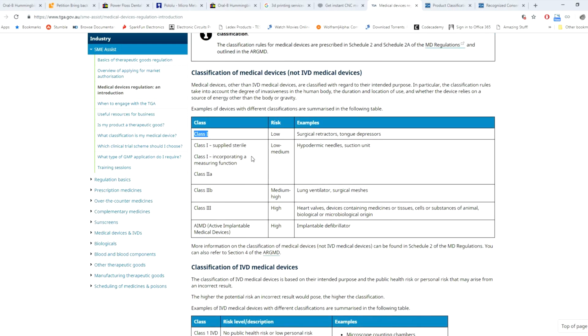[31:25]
Obviously the higher classes have more scrutinized controls, and you need to meet a lot of requirements before those things can even be listed as products. Lower classes have lower controls, but obviously there are still some things that need to be reached, or there are still standards that need to be met.
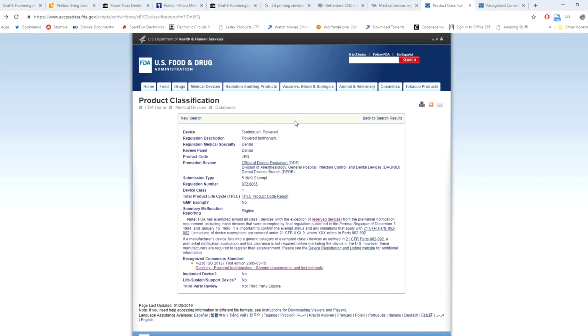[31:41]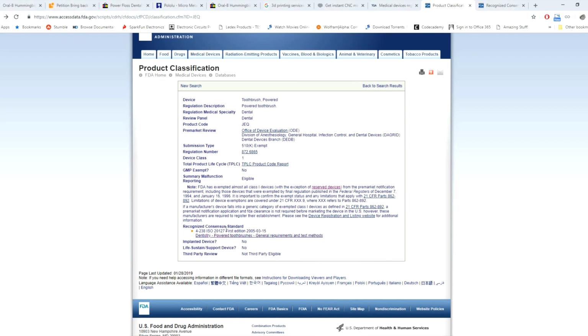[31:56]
Because this kind of electric tooth flosser wasn't really on the market, the Oral-B Hummingbird was not on the market anymore, so I couldn't find any FDA classification on it. But I did find that an electric toothbrush, as seen here, is classified as a device class 1. And if we see here, the recognized consensus standard says powered toothbrushes, general requirements, and test methods. Essentially, for this thing to go on the market, you need to meet these FDA standards. So what does that mean?
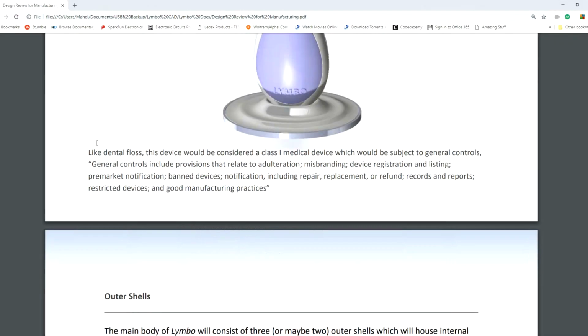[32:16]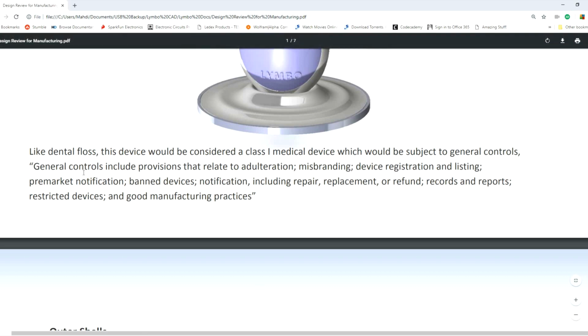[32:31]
I found some information in the past, and I wrote that, like dental floss, this device would be considered a class 1 medical device, which would be subject to general controls. General controls include provisions that relate to adulteration, misbranding, device registration and listing, pre-market notification, banned devices, notification including repair, replacement or refund, records and reports, restricted devices, and good manufacturing practices. So basically, you need a quality control system in place if you're going to market, sell and distribute this product.
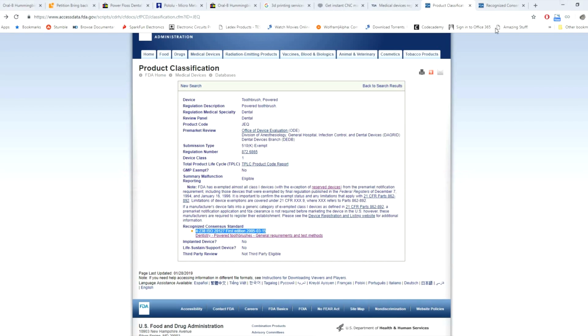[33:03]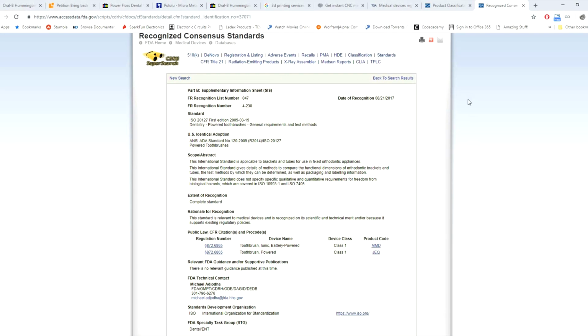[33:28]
General standards have to be met, like the thing has to come sterile, and obviously because somebody's putting it in their mouth, if it has any bacteria on it, they could become sick. And it's not really good enough just saying, oh, we put it together in a clean environment, everything's all good. You need to follow set guidelines and have your practice audited so you can prove that you're meeting these guidelines and standards. Essentially, you would need probably at least a handful of employees and quite a bit of capital, quite a bit of money behind your company to meet these standards.
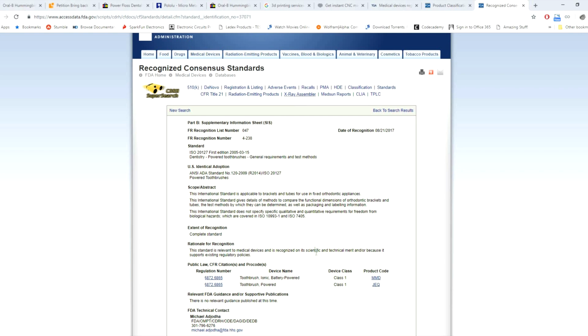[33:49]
Generally on Kickstarter, you don't really have medical devices. And to be honest, I'm not even sure if Kickstarter allows medical devices to be marketed, just because the level of scrutinization and regulatory requirements is a lot higher than other markets. If you're selling just a general lamp or light shade on Kickstarter, it doesn't have to arrive sterile. The risks to the user are a lot lower.
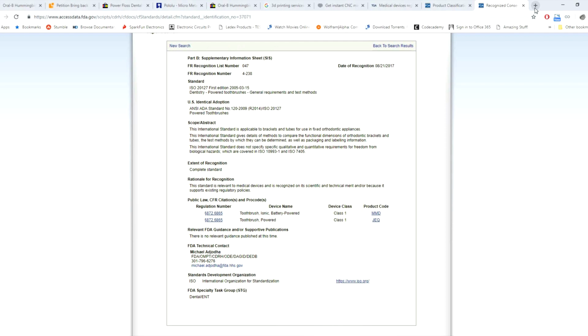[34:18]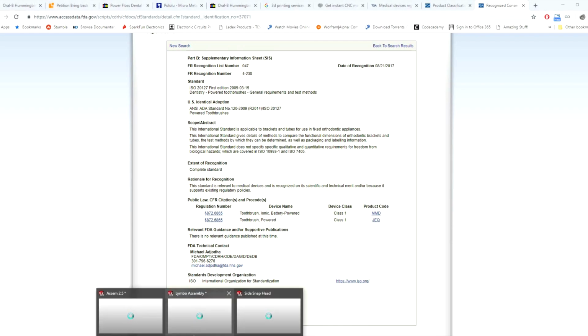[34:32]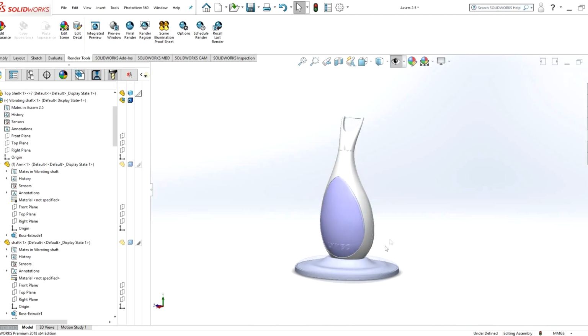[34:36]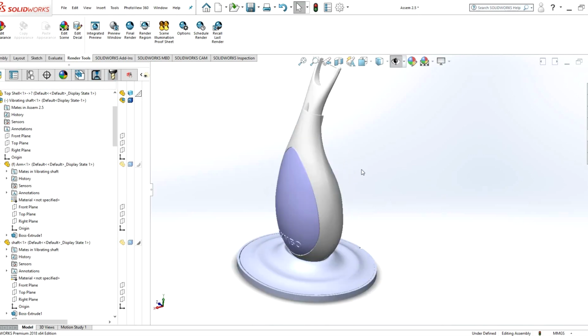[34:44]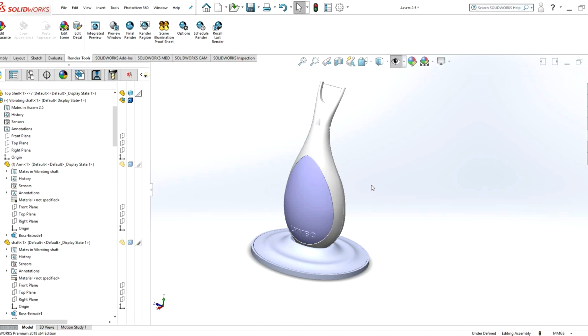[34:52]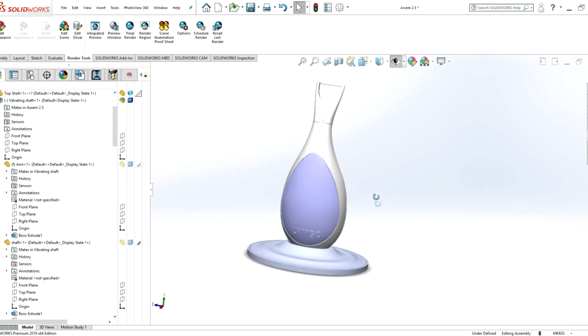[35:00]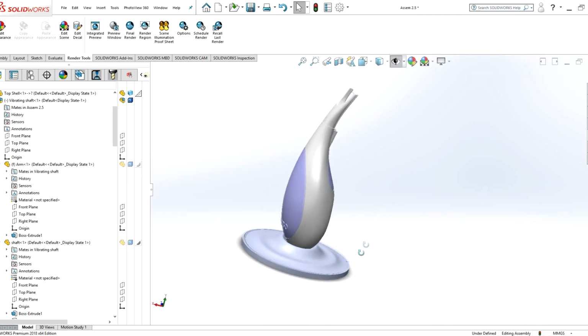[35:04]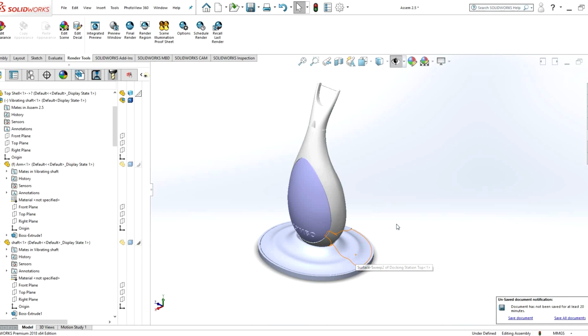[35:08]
So I decided that starting a small company with a medical device, even though this isn't a super serious medical device, would be hard work, and you'd probably end up moving away from the design engineering side of things and more onto the quality control and regulation of it. It's not to say that this thing couldn't be a real product out there. But something like this would be a lot easier for an established company in the medical device or hygiene field, like Oral-B or Colgate, for example, to develop, because they would already have the company infrastructure to meet the requirements to sell this. Trying to do crowdfunding with a small medical device would be hard work at the very least, and it wasn't really the path I wanted to go down.
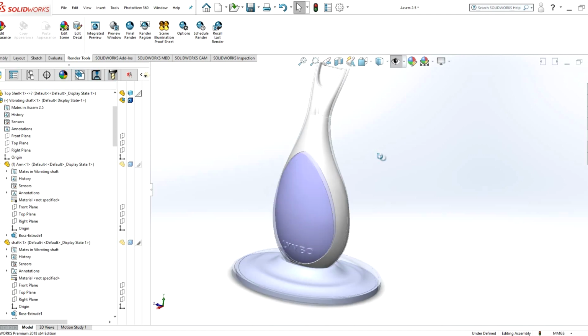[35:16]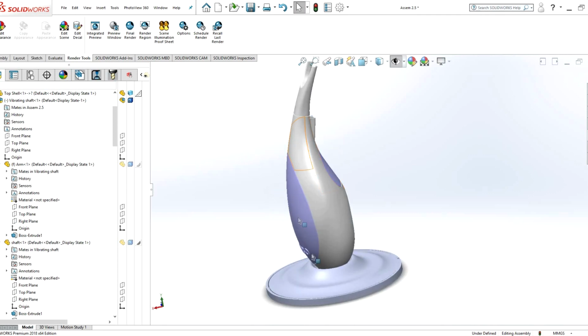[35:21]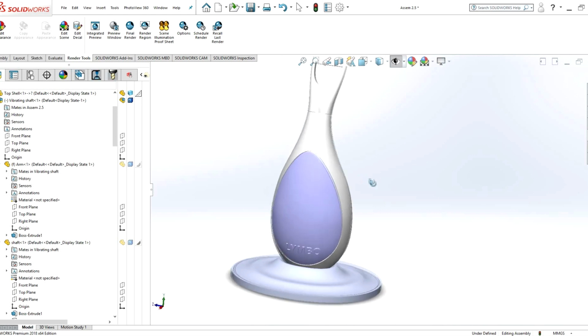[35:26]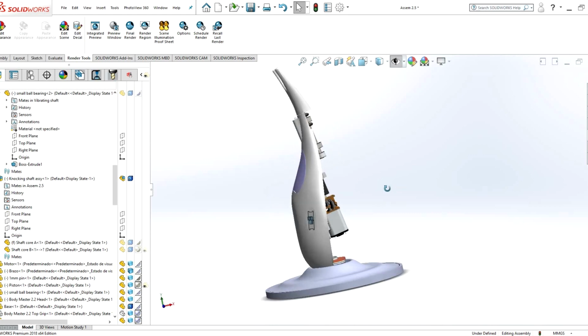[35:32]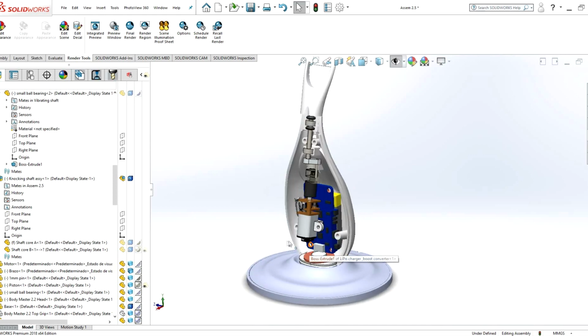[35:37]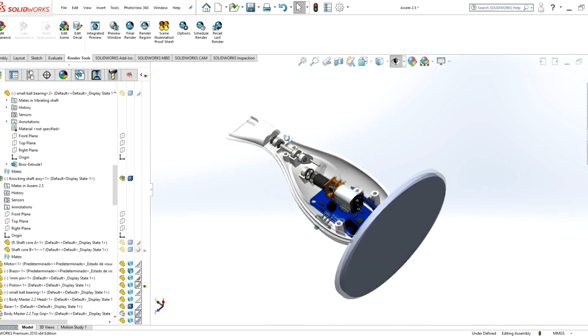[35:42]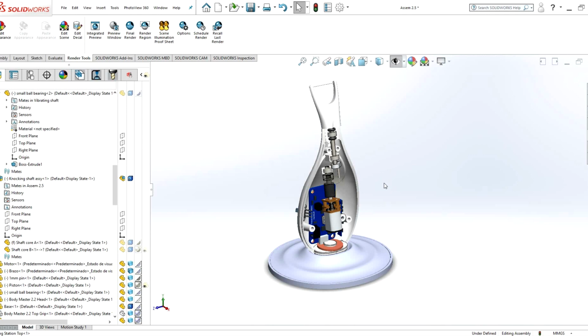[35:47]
Regardless, I learned a lot from this project, a bit about business and even just general Solidworks modeling. I'd never actually done any surface modeling, which I had to do to get all these smooth ergonomic shapes. If you want to learn about surface modeling, feel free to check out some of my other videos on the channel. If you do have any questions about this project, please comment below. I read all comments and generally reply if I have useful information to offer. I probably won't share the files for this model, because this is more of an educational video as opposed to sharing designs or models.